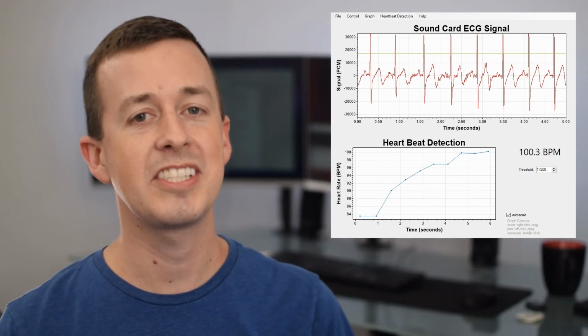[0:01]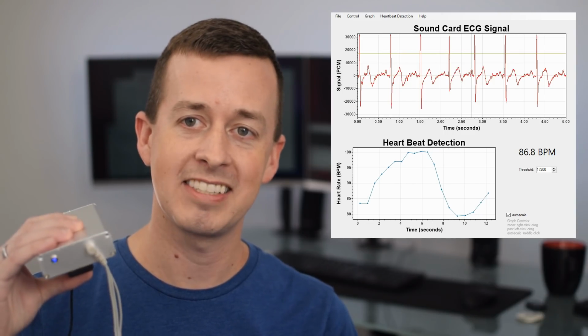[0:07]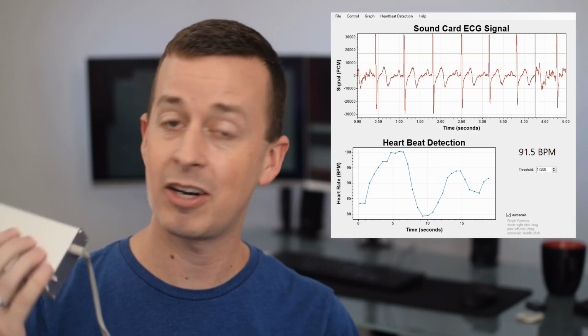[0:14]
What you're seeing on the screen is my actual ECG signal being displayed and analyzed in real time using this device. And if you look at it closely, you can see the blue light flashing in coordination with my heart beating. In this video, I'm going to discuss how I made this device.
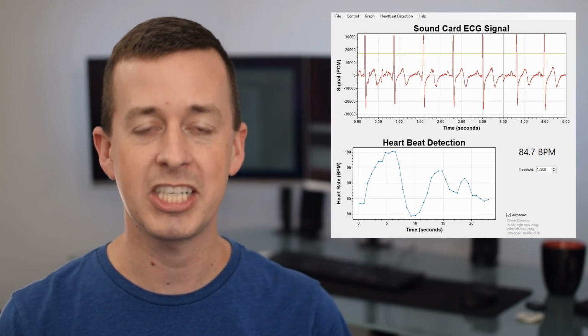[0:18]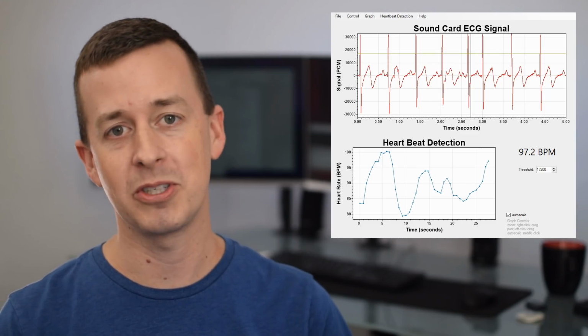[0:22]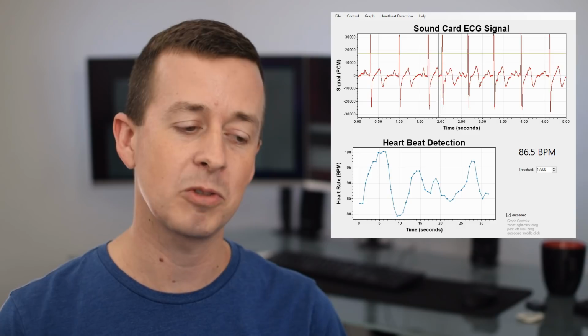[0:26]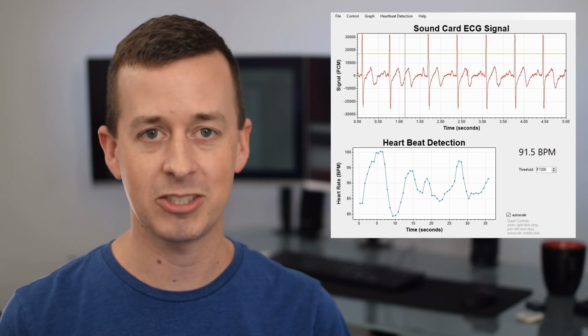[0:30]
It's based on an AD8232 breakout board, which amplifies the electrical signals coming from my heart. It then sends them to the computer through the microphone jack of my sound card. I'm going to show how I wrote custom software to analyze the signals coming in the sound card and do rudimentary heartbeat detection. Now, before we go into the details of how this device was made, let's talk about what it is that ECG machines actually measure.
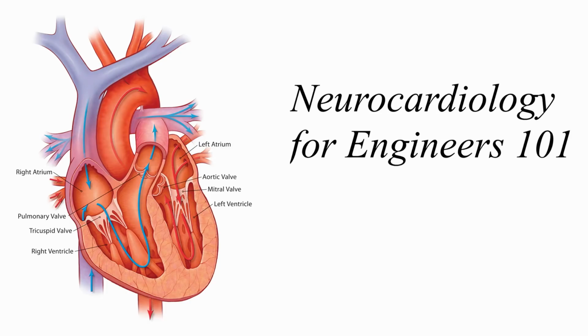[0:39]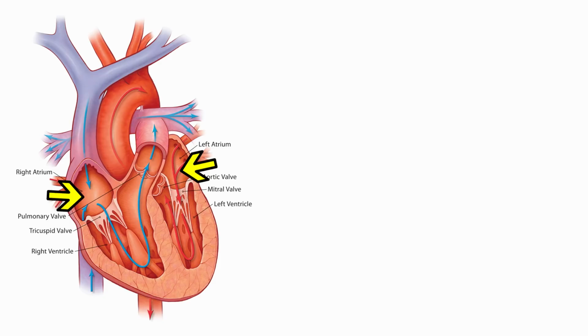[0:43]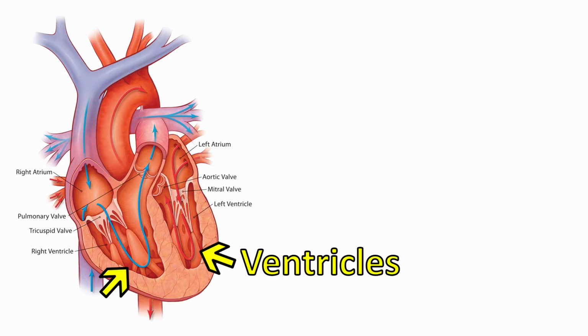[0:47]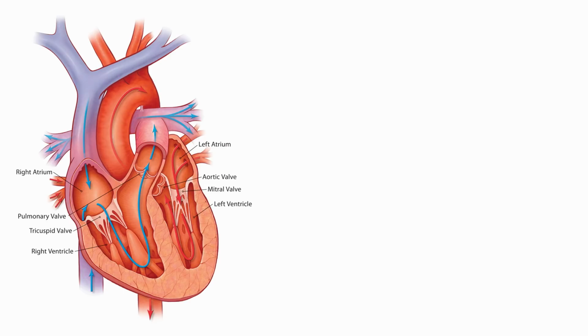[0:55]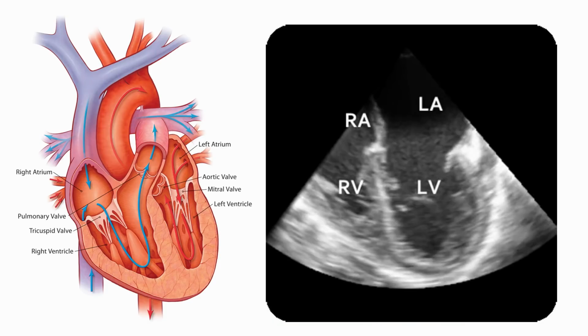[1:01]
When the heart contracts, its chambers and one-way valves help push blood around the body. The top chambers, called atria, squeeze to load the ventricles with blood. The ventricles are much stronger, and when they contract, one-way valves between the atria and ventricles slam shut, and the ventricles squeeze blood throughout the body. If you put your head up to someone's chest and you hear their heart beating as lub-dub, lub-dub, what you're actually hearing is those one-way valves slamming shut as the ventricles contract and relax.
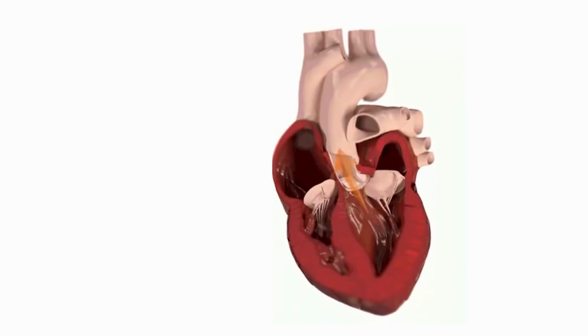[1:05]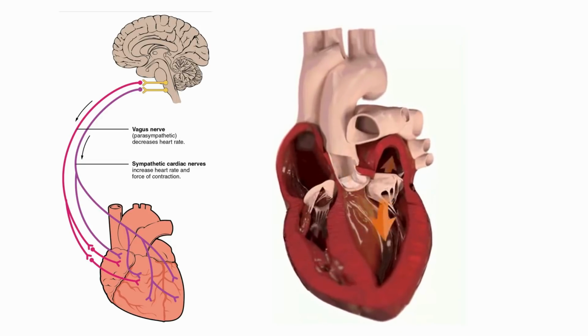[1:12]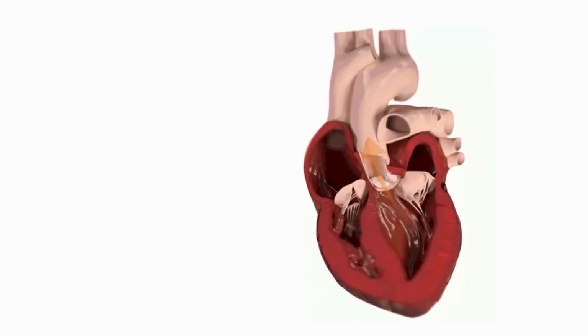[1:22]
Different regions of the heart have to contract in the right sequence for the heart to function properly. This contraction is controlled by neurons. At a high level, the heart is generally controlled by the brain. Excitatory and inhibitory messages travel down nerves from the brain to the heart, but they don't actually tell the heart when to beat. Individual heartbeats are controlled by little clusters of neurons called ganglia, which live on the heart itself.
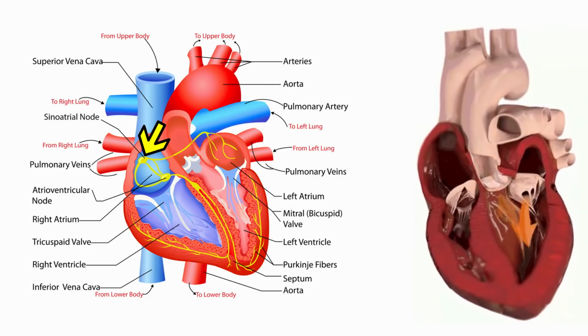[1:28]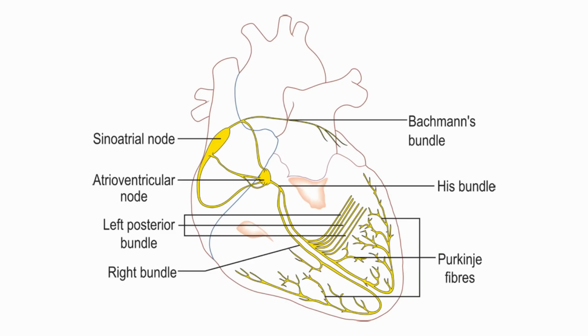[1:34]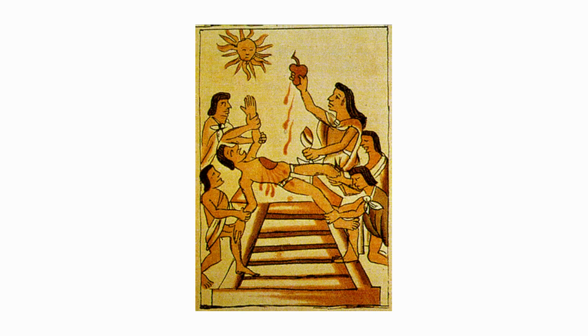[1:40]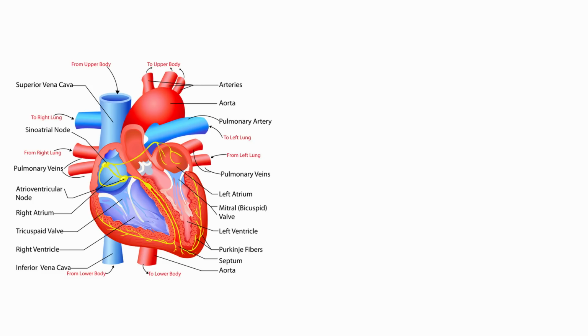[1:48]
The SA node and AV node are ganglia, which control the timing and strength of heartbeats in the atria and ventricles. These intrinsic cardiac ganglia have what it takes to beat the heart on their own. This is why if you remove the heart, it will continue to keep beating for a while. When the brain controls cardiac output, it does so by relaying messages to the intrinsic cardiac ganglia. The cardiac ganglia then send chemical signals to cardiomyocytes, the muscle cells in the heart, telling them when to contract.
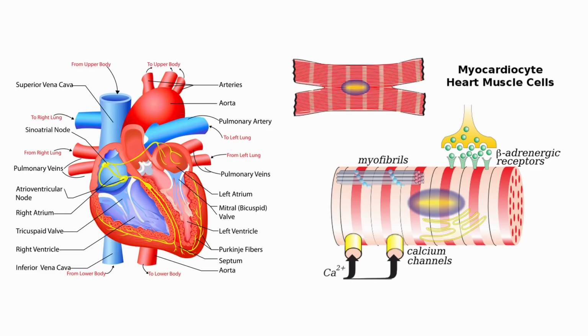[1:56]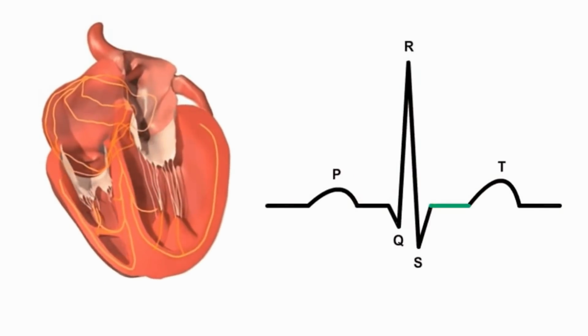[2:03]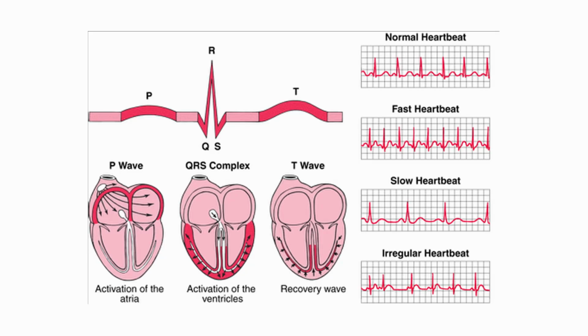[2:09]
Contraction is achieved when cardiomyocytes open sodium and calcium channels, allowing positive ions to rush inside the cells. It's this flow of positive ions into muscle cells that produces the electrical signal we can measure with an electrocardiogram. The large spike you see on an ECG is the electrical activity associated with ventricular depolarization, and the little hump before it is when the atria depolarize. Now, electrocardiography is its own branch of medical science, but for the purposes of this video, we've described enough to be able to understand what it is we're looking at when we see an ECG signal.
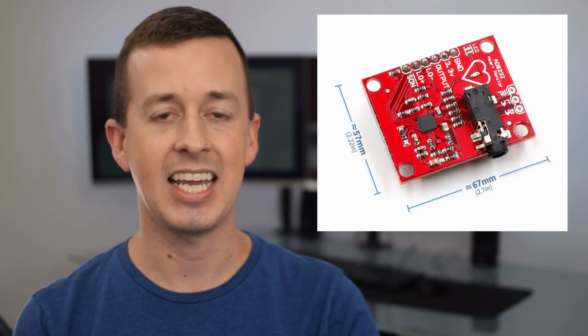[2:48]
Let's go back to talking about the AD8232. Analog Devices announced this chip in 2012, and it was really convenient because it was so simple and it's very low power, but it's a little bit difficult to work with because it's so small. It has 20 pins and it's only 4 millimeters by 4 millimeters. In the last few years though, a lot of different companies have been making breakout boards for them, and in recent years, these breakout boards have become extremely inexpensive and easy to obtain.
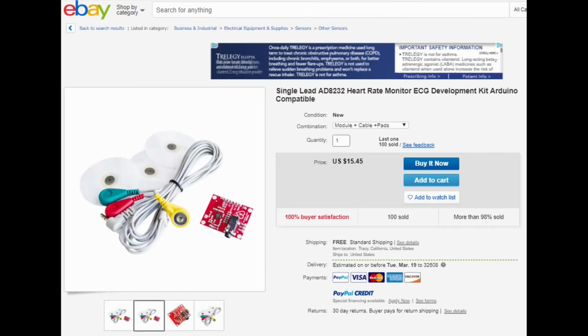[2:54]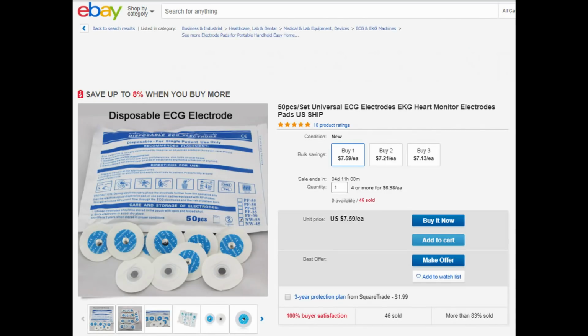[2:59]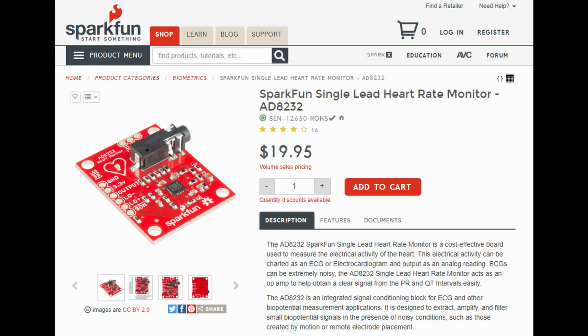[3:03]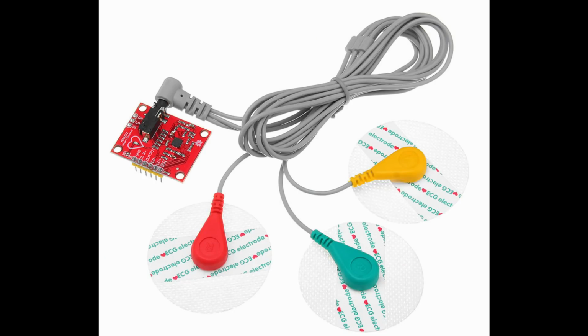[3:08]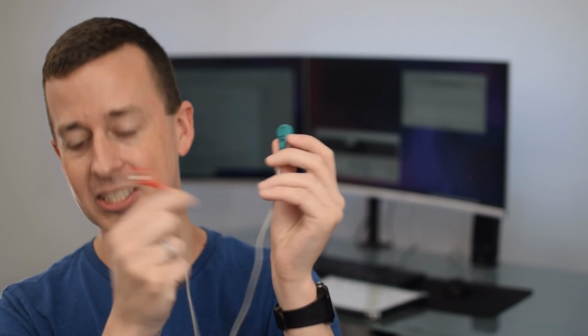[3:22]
I don't remember exactly where I got mine, but I'm pretty sure it was an eBay item like this. Large quantities of disposable electrodes are also cheap on eBay. It's worth noting that similar devices can be found on Amazon and more officially on SparkFun, although you'll have to purchase the cable and pad separately for an additional fee. If you decide to make an ECG machine based on the AD8232, I recommend getting some high quality electrodes. Mine came with a little plug here and snap electrodes, and these are really inexpensive online. You can get bags and bags of these electrodes.
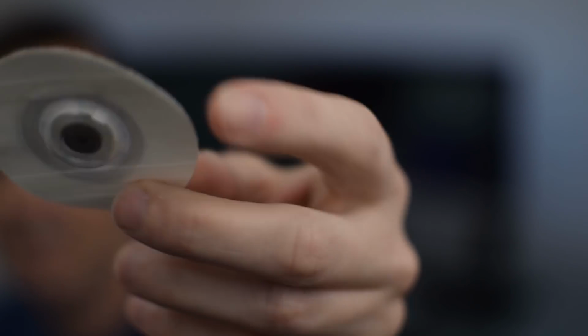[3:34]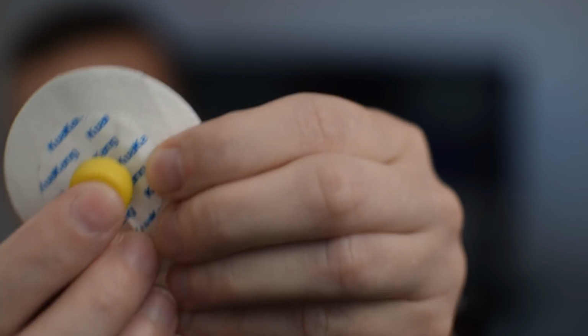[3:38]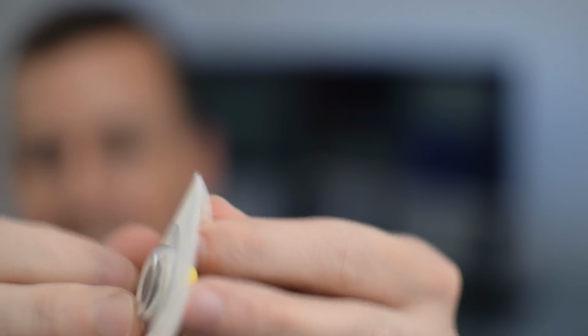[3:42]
And let's take a closer look here. Focus. There we go. So that's what an electrode looks like. And you can pretty easily snap it like that. And it peels.
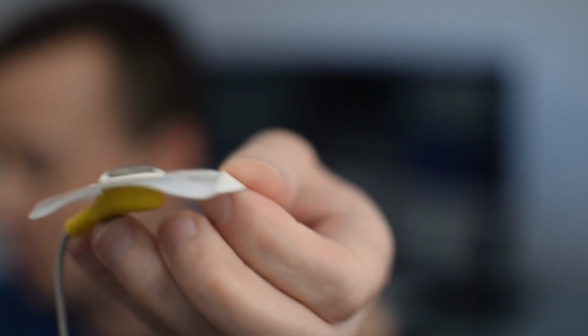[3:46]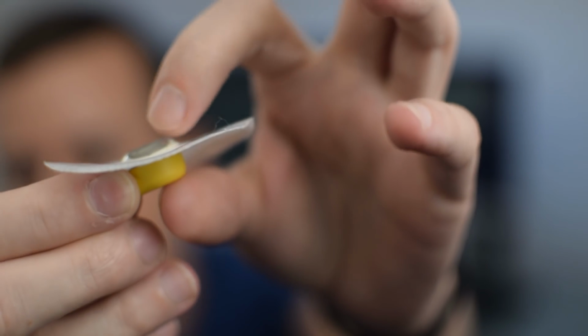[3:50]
And it reveals a goop. Now that goop in the center is silver chloride gel. That makes a really good electrical connection with your body. So if you put this on your body, it's going to get a really high quality signal with low noise. So I recommend definitely get these. Don't skimp on the electrodes because your signal will be a lot noisier.
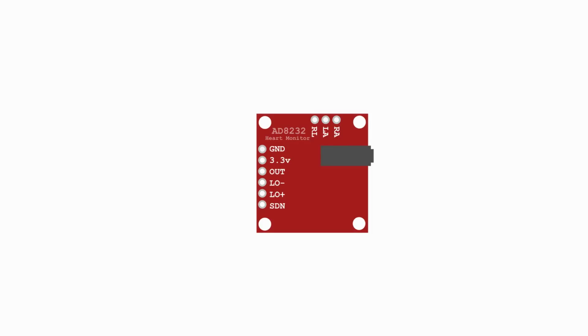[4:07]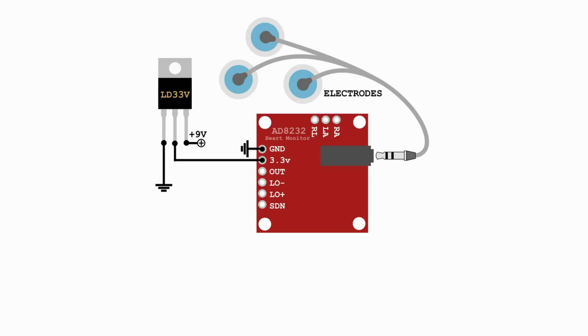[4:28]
This is the AD8232 breakout board. To get started, we need to supply power at 3.3 volts. I prefer using a linear voltage regulator hooked up to a 9 volt battery. And although this configuration isn't power efficient, it's simple and small and a good place to start. Definitely use a battery instead of a power supply because it is safer and it's usually lower noise too. The electrodes could be soldered directly to the board, but I prefer using the built-in audio jack.
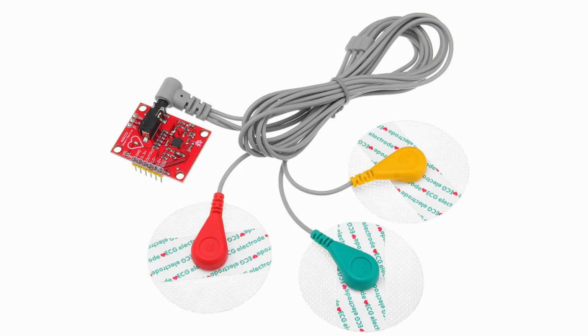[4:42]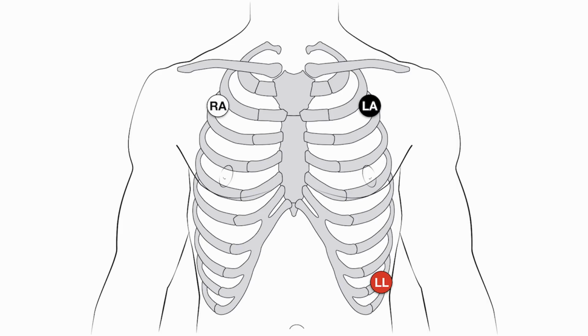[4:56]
Let's take a moment to discuss where to place the electrodes. Now, electrode placement is actually pretty important because it affects the shape of the ECG signal. Now is a good time to note that technically this is a single lead ECG because it only measures the voltage between two electrodes, with the third electrode being ground. Therefore, this system is a three-electrode, single-lead ECG system.
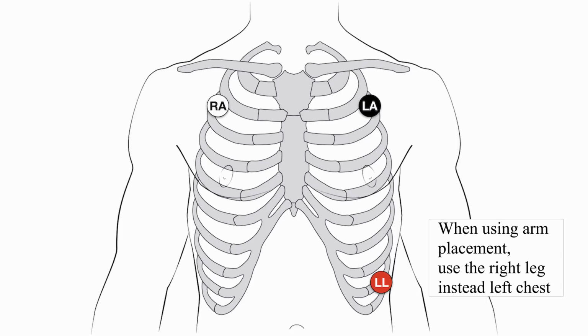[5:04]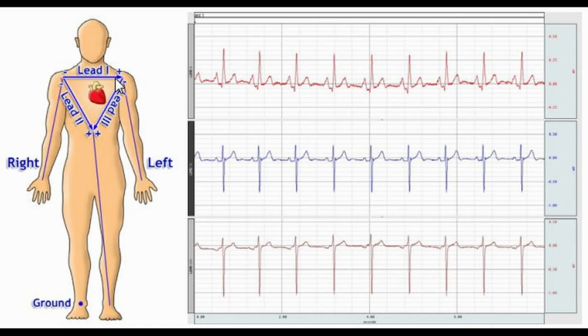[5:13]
Let's take a moment to talk about placement. Ideal placement looks like this, with electrodes typically labeled RA and LA for right arm and left arm, and LL for left leg. Although you can put these electrodes on your arms and legs, ideal position is on your chest, forming a right triangle around your heart. Placement in different locations will change the shape of the ECG signal as different muscle groups are being measured.
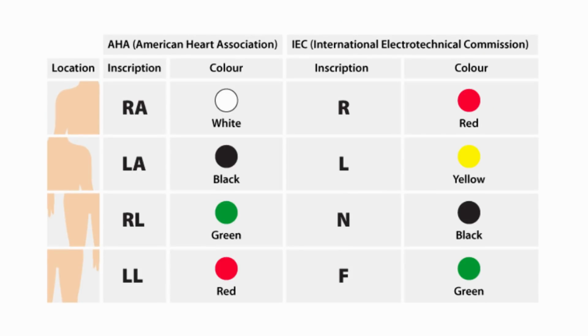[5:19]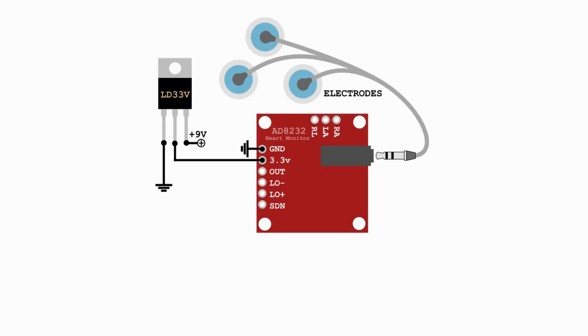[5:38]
There are international standards which define ECG electrode color codes, but if you're going to get a cable from a mysterious vendor on the internet, you can't always rely that they're accurate. So it's probably worthwhile to use a continuity meter to beep out your connections and make sure you're connecting the right electrodes to the right part of your body. With the circuit powered up and the electrodes in the right spot on your body, you can use an oscilloscope to see the ECG signal coming right off the breakout board.
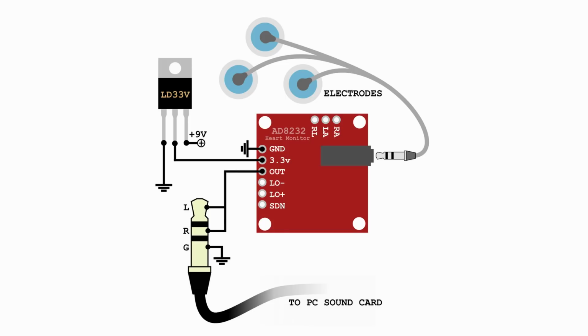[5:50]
To feed the signal into a computer using the sound card, use a socket or creative soldering to connect it to a stereo cable, and then plug the other end into the microphone jack of your computer sound card. I prefer to short the left and right channels together because I can't always be sure if the computer software is going to average the left and right channels together or just draw data from the left channel.
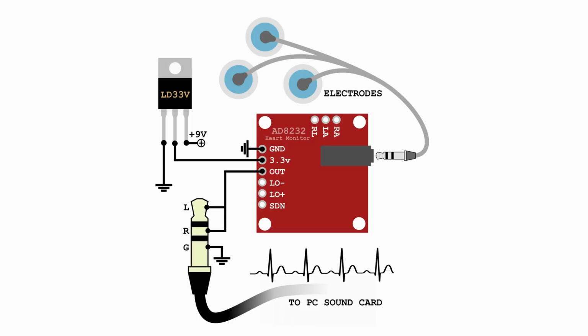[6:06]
This may be all you need to get started visualizing your ECG with a computer, but in my case, I found that my PC sound card was too sensitive and the output signal from the breakout board was too large. To reduce the size of the signal, you could use a resistor divider or a potentiometer.
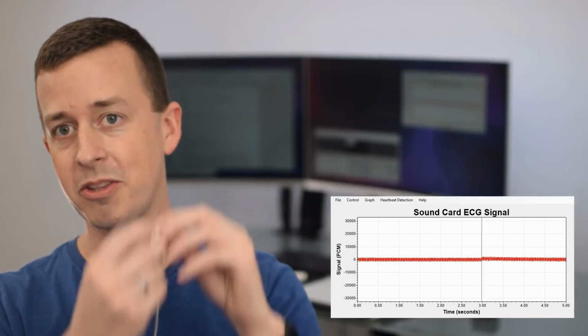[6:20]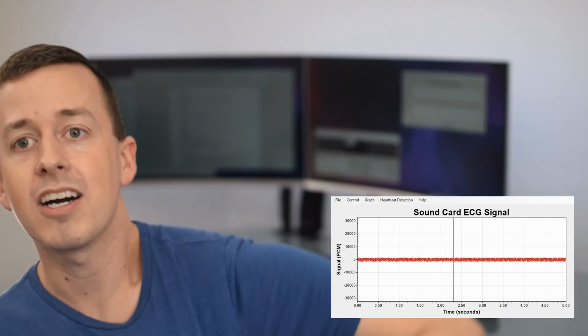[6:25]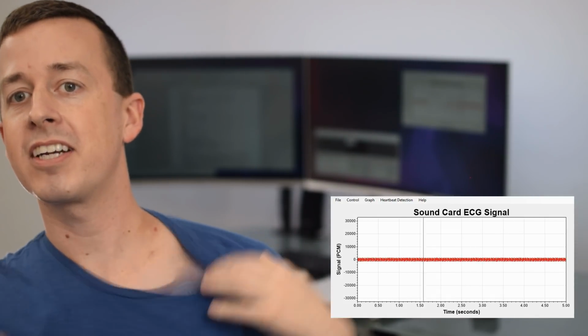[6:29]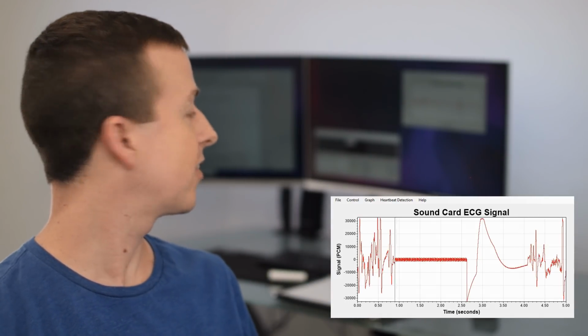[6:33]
Okay, I've already put on two of the three. This is the third one. I'll peel off the backing, and I'm going to put it on my upper chest on the left side, kind of like right there, and we should see the signal start to stabilize. And there's the ECG coming through.
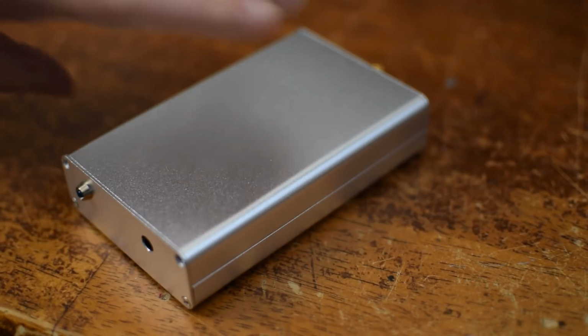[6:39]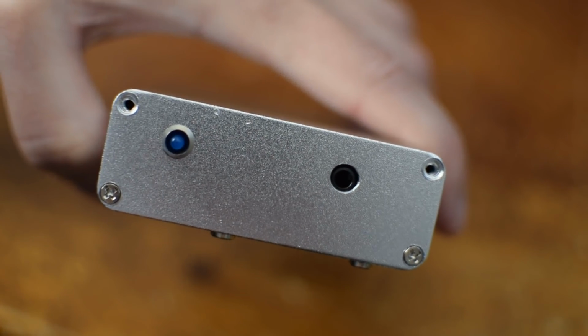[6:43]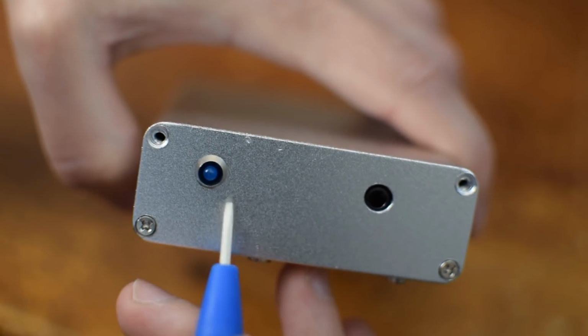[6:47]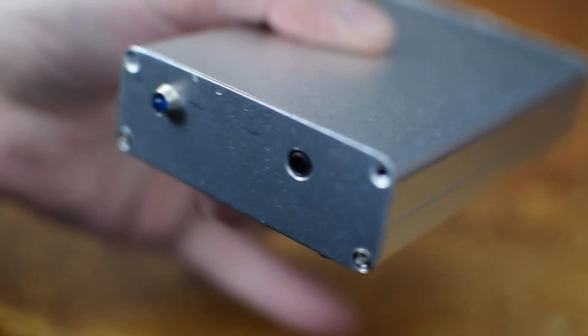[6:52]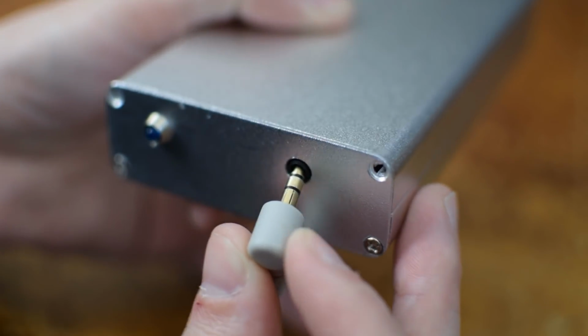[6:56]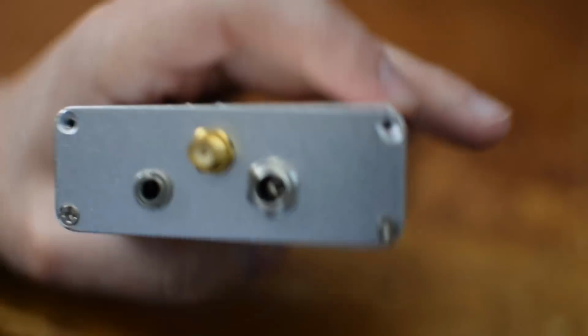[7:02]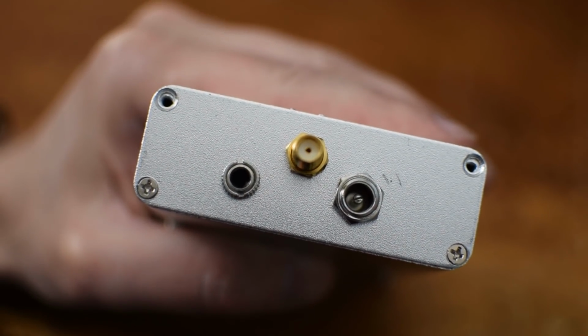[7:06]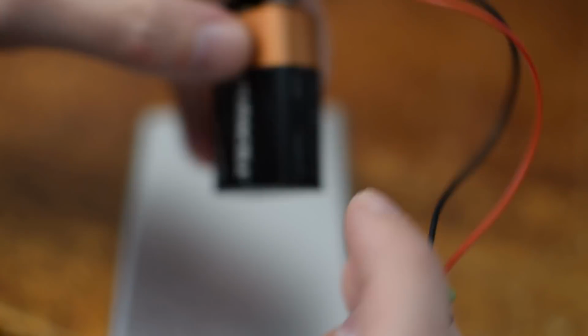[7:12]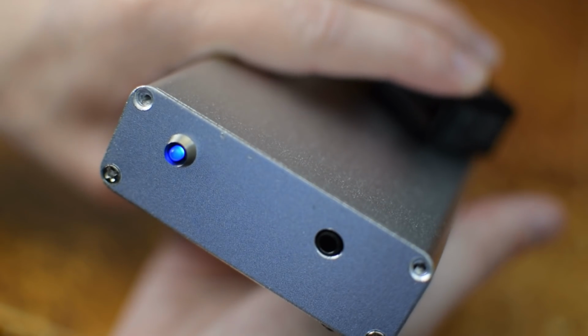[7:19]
On the back, we've got a few things. We've got a barrel connector, which can be used to supply DC power. And in this example, I'm just using a 9-volt battery with a little barrel jack attached to it, so it's really convenient. I'll just plug that in, and when I do, the light starts coming on solid in the front to indicate we have power.
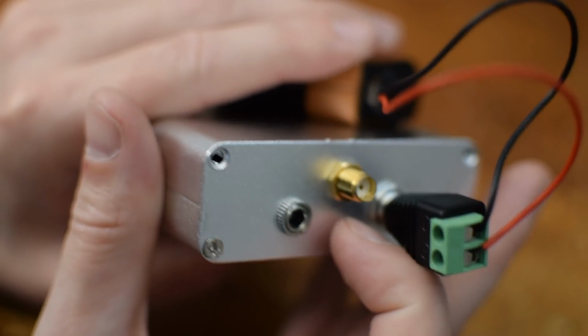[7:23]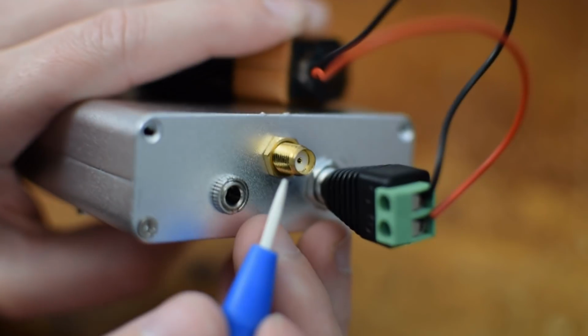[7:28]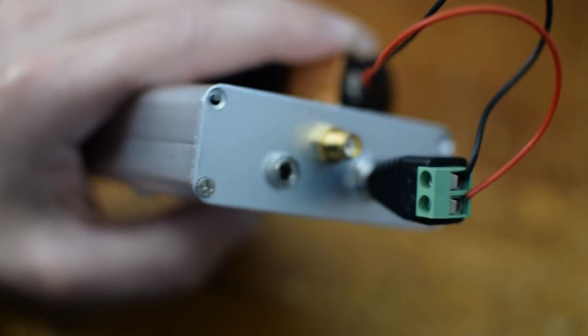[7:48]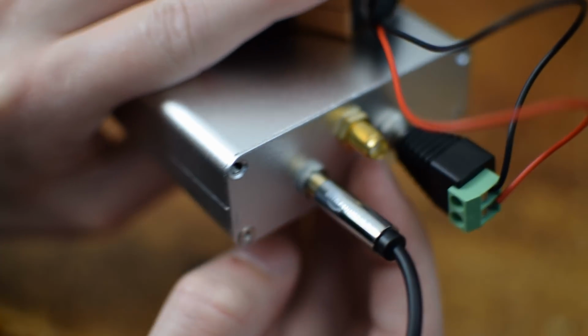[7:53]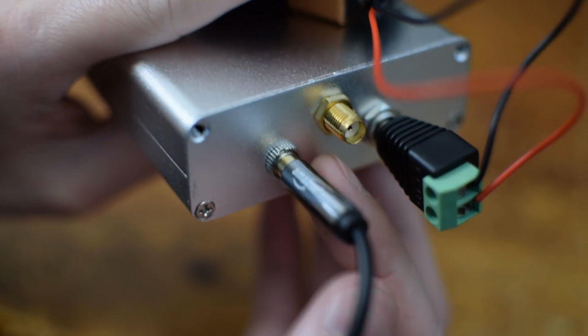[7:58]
I also have an SMA connector where I output the voltage coming directly off of the chip. So this lets me access the actual voltage coming off the ECG amplifier, but oftentimes this is too strong and it can overwhelm the microphone jack of your sound card. So as a result, I added a voltage divider to bring the signal down to microphone audio levels, and that's what comes out of this. This is a 1/8 inch female stereo adapter, and I can plug in a cable like this one that goes to the microphone jack of my computer sound card, and we can analyze the signal that way.
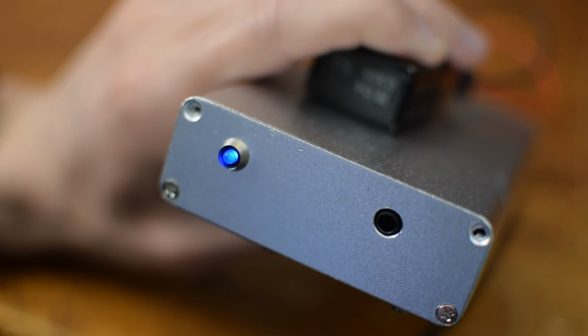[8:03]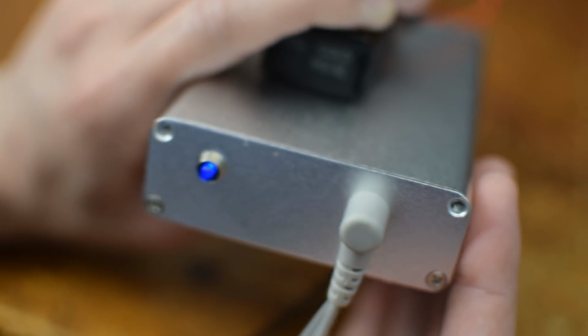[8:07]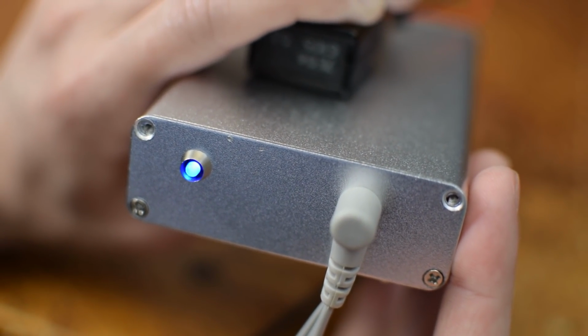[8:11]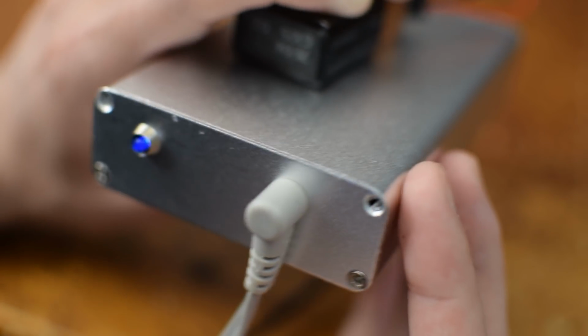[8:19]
Let's take a look on the front of this device, and I'll plug in my chest leads, and pretty much right away, you'll be able to see a heartbeat coming through. And again, the solid blue light indicates it has power, but this device has been modified so that it also fluctuates the light to indicate the heartbeats. So let's take a look inside and see how it works.
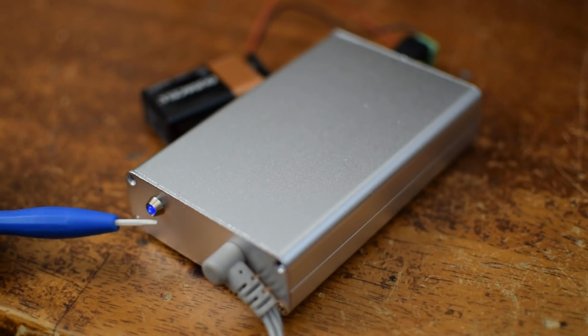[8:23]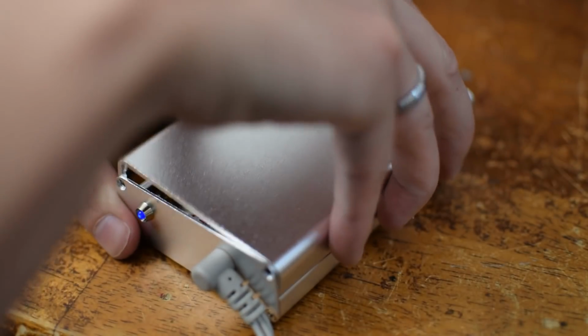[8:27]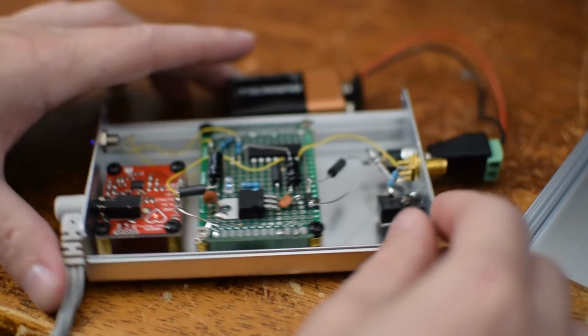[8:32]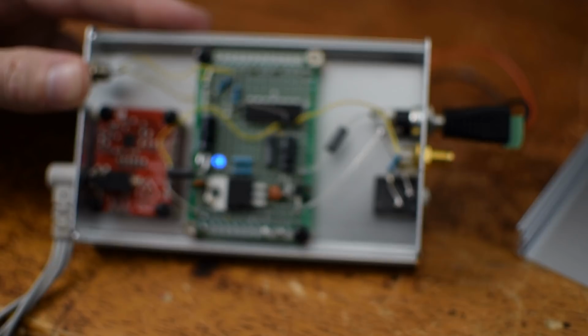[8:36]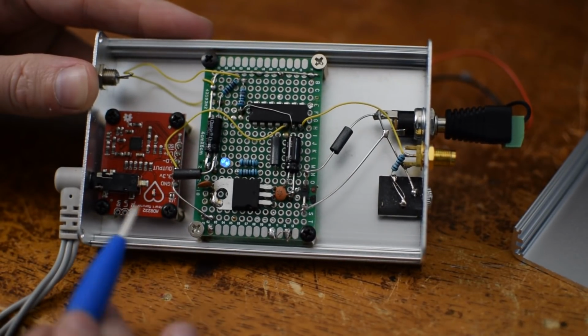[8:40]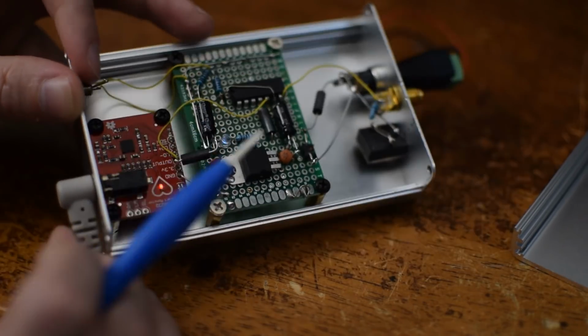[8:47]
Right now I've got it hooked up to my chest, which is why the blue light is flashing in coordination with my heartbeats. We can open it up and you'll see that I have a little more here than is necessary, but it adds a few features that I might find useful in the future. On the left, you can see the AD8232 breakout board, and it has its own little light that beats when my heart beats. The connector has the hole drilled through, so I can easily access it from the front panel.
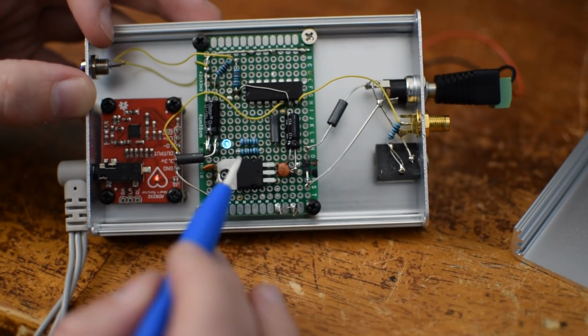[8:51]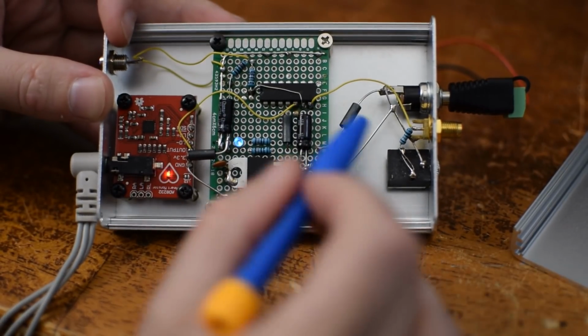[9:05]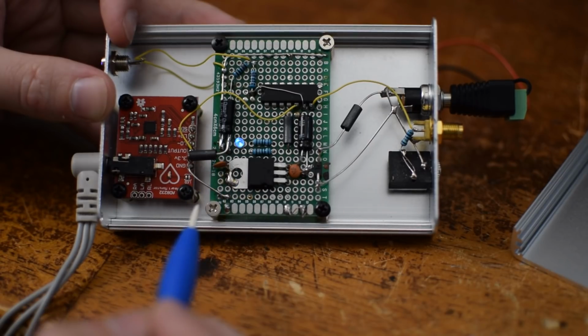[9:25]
And the only three connections going to the main board are ground, power, 3.3 volts, and then the output signal. Let's quickly talk about the power chain. It's actually super basic. On the right side of the board where the barrel connector is, power comes in here, and then it runs into this LD33V linear voltage regulator to bring it down to 3.3 volts. I added a 0.1 microfarad decoupling capacitor on the input and the output, and also a 10 microfarad capacitor on the input and the output, just for good measure. There's a little power indicator LED, and that's pretty much all we need for the power supply.
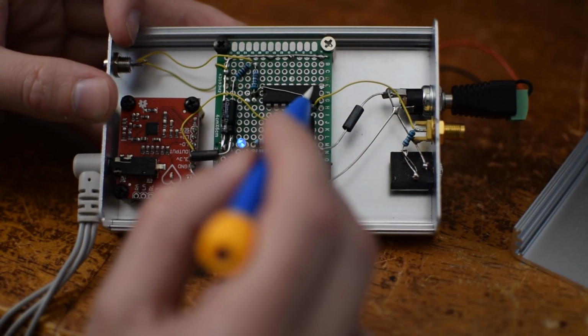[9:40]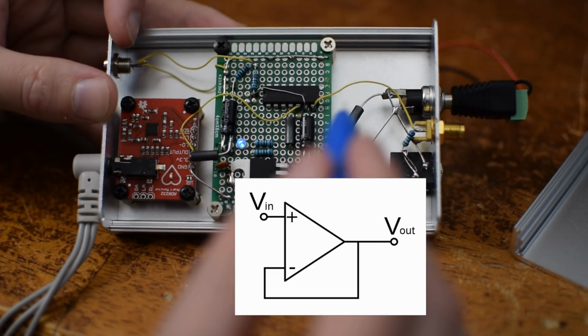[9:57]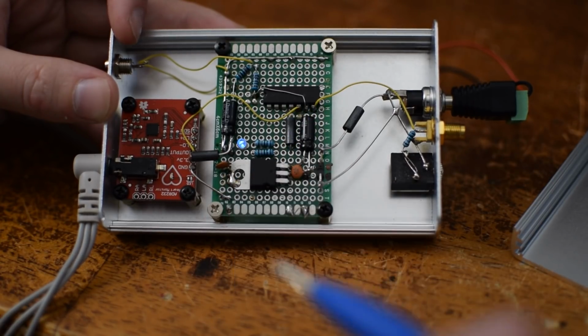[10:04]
Now, rather than take the output of this chip directly and send it right out the SMA connector, I decided to use an operational amplifier to help buffer the signal a bit. So this is an LM324 being powered from the 9 volts coming in here. It's not being powered from the 3.3 volts, but the output of the signal is going straight into one of the inputs, and it's configured in a non-inverting unity gain configuration. So really it's just acting as a voltage follower, and it's serving the purpose of a buffer in the circuit.
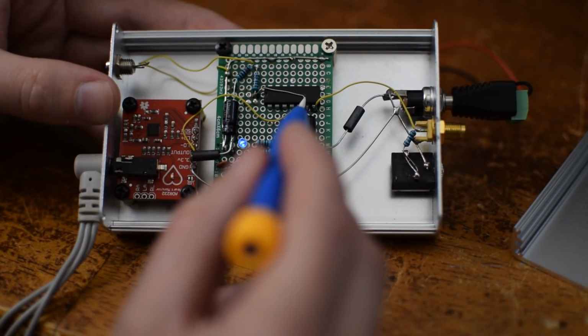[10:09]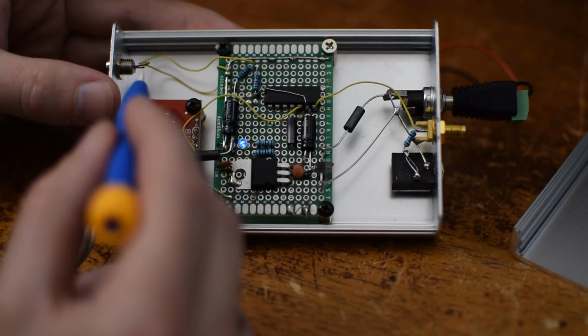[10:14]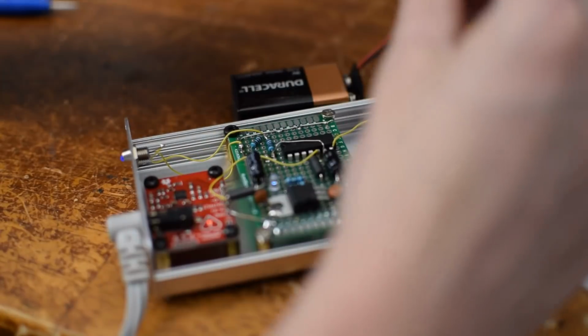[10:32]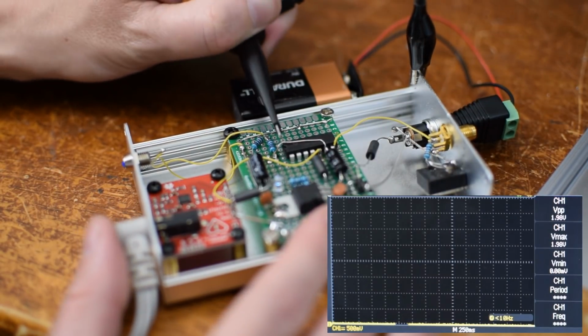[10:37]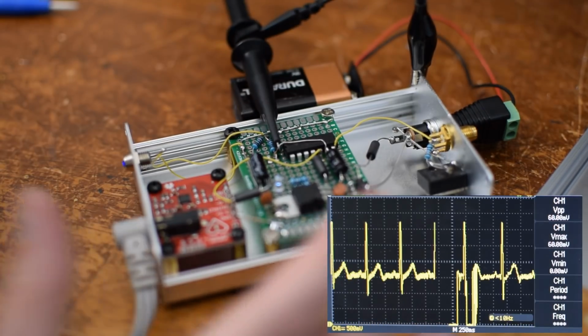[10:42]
I use a bit of a voltage divider here to mix the output of that buffered signal in with the power supply voltage to supply a signal to my LED. That's what lets the LED be always on, sort of glowing gently blue, but then to have large up and down fluctuations based on the heartbeat. The output goes to the SMA connector, and then from there it goes through a voltage divider to go to the stereo jack. Let's hook this up to the oscilloscope so we can see what the signal looks like. I'm going to ground it to the cage and then probe the output of the voltage follower buffer here, and we can take a look.
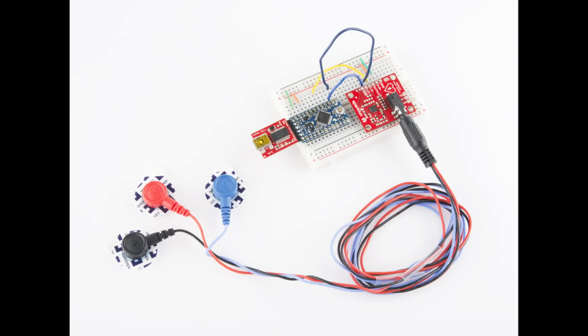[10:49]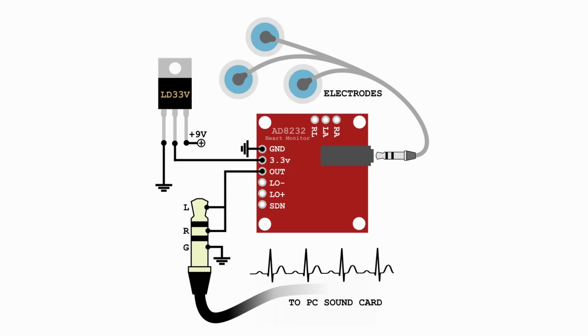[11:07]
I've seen some tutorials and videos out there demonstrating how to analyze the ECG from an AD8232 using a computer and a complicated chain of an ADC running on an Arduino, sending serial values over USB with a USB to serial adapter, and it's kind of complicated. And although it works, I think that using the microphone jack is a really interesting idea because it's so simple. I mean, everybody has one and it requires no special hardware.
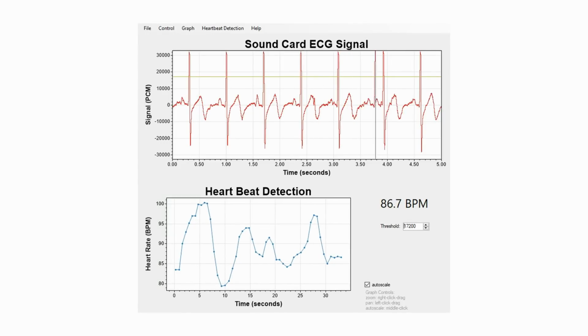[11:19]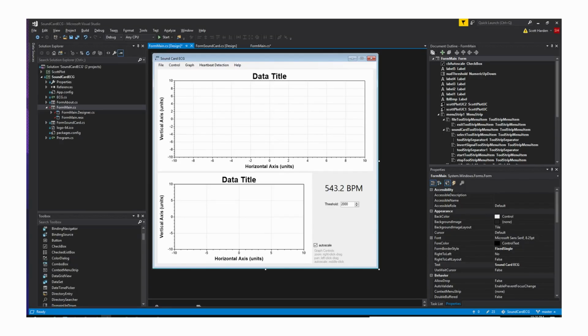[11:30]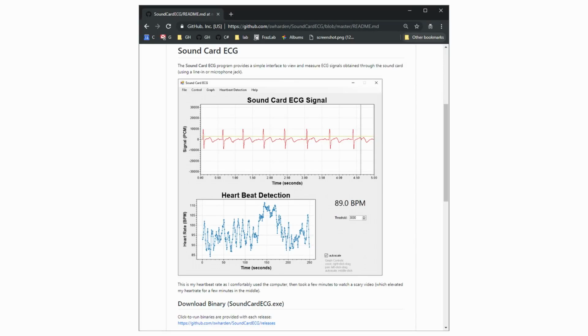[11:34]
So I wrote some Windows software specifically for this project to make it easy for anyone to visualize their ECG signal, and also to perform rudimentary heartbeat detection. Now this software is really easy to use, you just click it and it runs, and it's fully open source on GitHub, so anyone can have a go at improving it any way they like. You can find it by Googling the phrase SoundCardECG, all one word, or by using the link in the description.
One of the things I wanted to mention is that it's been a while since I've shared a project online, and that's because I've undergone some pretty serious medical treatments recently. My last video about bit banging SPI devices with FTDI chips was supposed to be a two-part video, but shortly after I filmed part one, I got started with chemotherapy, and I actually tried to film part two while undergoing chemotherapy, but I was always too sick to actually get it done. Since then, I've done radiation treatment, and pretty soon I'm going to be starting more chemotherapy.
So with that being said, it's a little bit hard to predict when I'm going to share my next project, but I still have some pretty good ideas for future directions I'd like to go with this ECG circuit. You might have noticed that the output has a connector where I can get the unattenuated signal directly off the chip. And there's a good reason for that. It's because there are several ways that this project could go in the future to extend the functionality of the circuit. So let's run through a few of those.
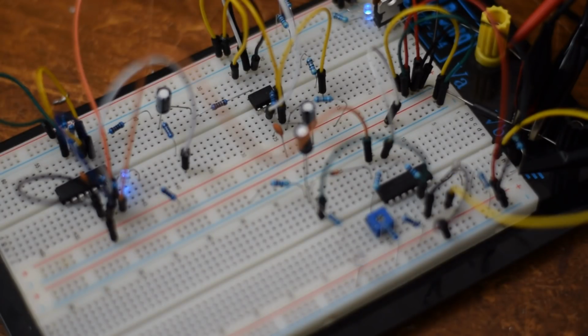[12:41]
One of my future goals is to use a circuit to detect heart rate that doesn't involve a computer. And in order to design circuitry to detect heartbeats, I found it really convenient to actually make a circuit that generates heartbeats rather than having to hook up an ECG electrode every time I want to practice detecting my own heartbeats. So I did that here.
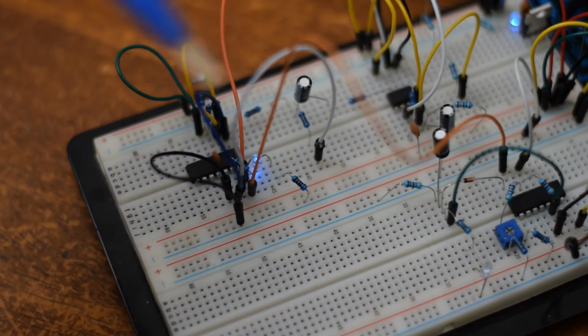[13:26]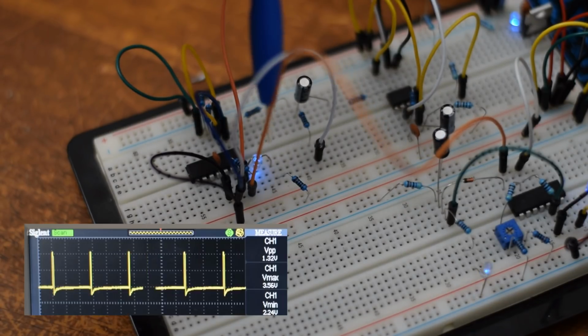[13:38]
This is a 555 in a configuration that produces one square pulse about once a second, and it runs through a combination of resistors and a series capacitor to make it look somewhat like a QRS complex. Now that's centered around 0 volts, so I used an LM324 quad op amp to add a standing DC voltage to that and then buffer the output signal in an inverting configuration, because out of the 555 it is always high and then it just dips low very quickly, and it ended up making the ECG signal appear upside down. But anyway, now that it's inverted and buffered, I have coming out of this wire a signal that actually looks an awful lot like an ECG, so I can practice doing event detection or QRS detection.
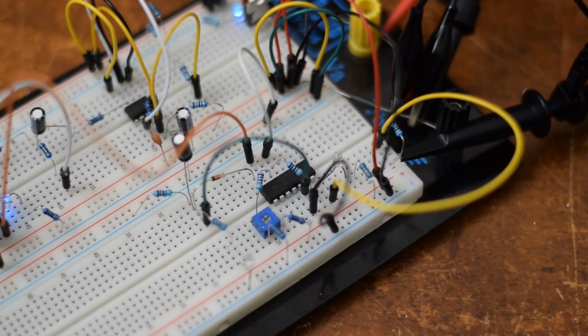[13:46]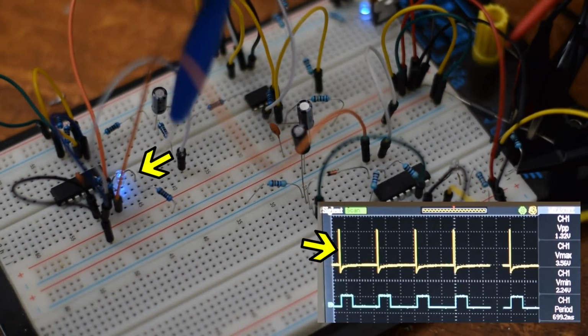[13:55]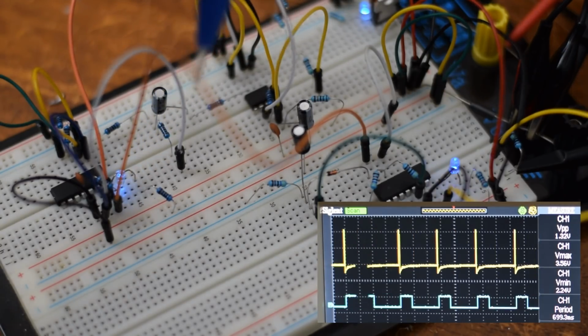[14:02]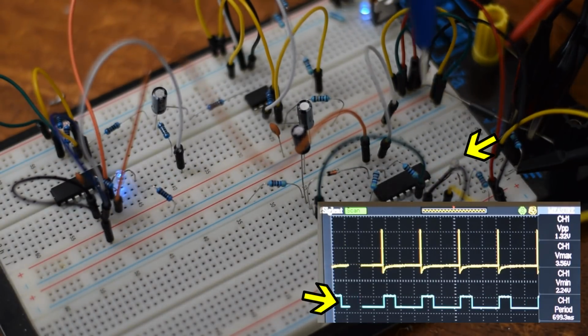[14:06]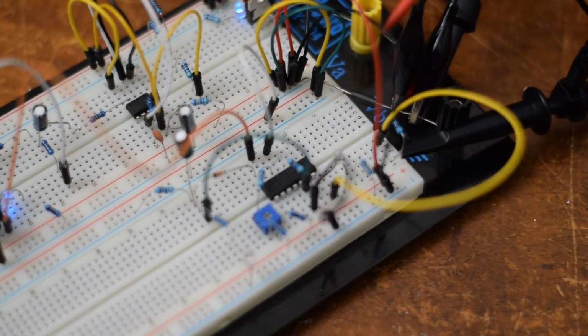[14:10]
This is the circuit I came up with to do really rudimentary QRS detection. The output is here, and the core idea is that it turns this ECG signal, so this light indicates the ECG, it's a standing voltage around 2 volts, and you can see the light fluctuating as the ECG occurs. This circuit detects this ECG signal and turns it into a square wave. The reason why I want to turn it into a square wave is because it's really easy to measure the period of square waves using, for example, a timer on a microcontroller.
I'd much prefer to do that rather than use an analog to digital converter to do high-speed measurements to measure the actual shape of an ECG signal and then try to do calculations on that. If I can make a little analog circuit that converts the ECG signal to a square wave, it's much easier to do heart rate detection. And potentially you could even do it all analog, or at least mostly analog, nothing fancy. But having this synthetic circuit to generate an ECG signal was really convenient in testing out different designs for this.
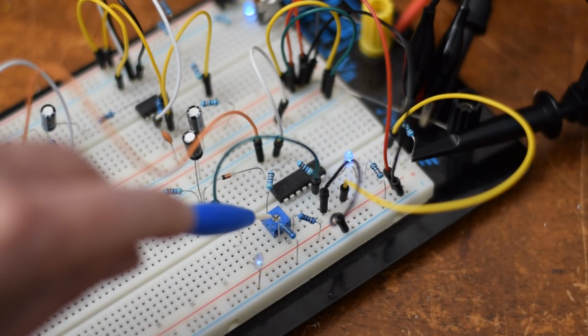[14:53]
This method uses a fixed voltage detection, so anytime the voltage goes above the voltage set by this potentiometer, this light flashes as this capacitor discharges, and then a square wave is produced. But one of the ways this circuit could be improved is by using the equivalent of automatic gain control, where the voltage on the potentiometer always lowers until it starts detecting heartbeats, and then the heartbeats kind of keep it going. That way, even if the amplitude of heartbeats change, or the amplitude of the QRS complex changes, it can still automatically adapt to detect heartbeats and convert them into square pulses.
So this is a really rudimentary first step, but indicates a lot of future directions that this project could go, especially for people who are just getting into electronics or want to have a practical application to practice designing analog circuits. When compared to some of the other ECG circuits I've made over the years, working with the AD8232 is one of the easiest ways to get started that I've experienced. So if you're new to the world of electronics, or this is the first ECG machine you've built, definitely start with this chip, and you'll have a pretty easy experience.